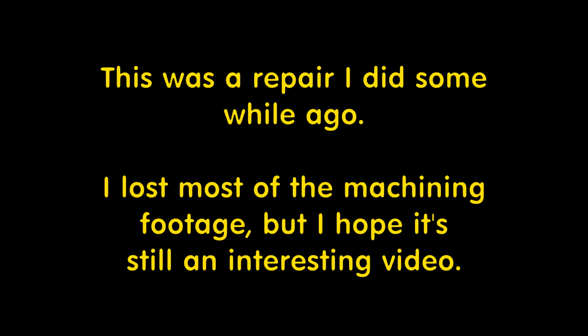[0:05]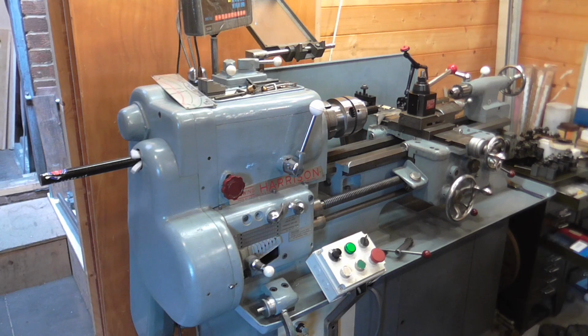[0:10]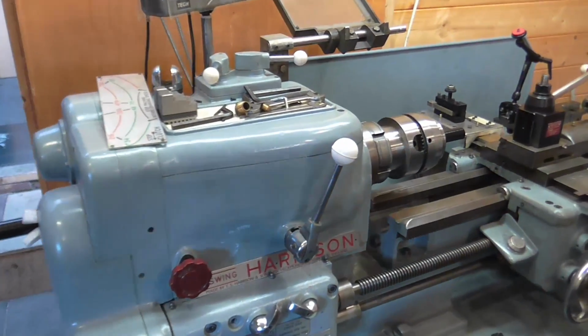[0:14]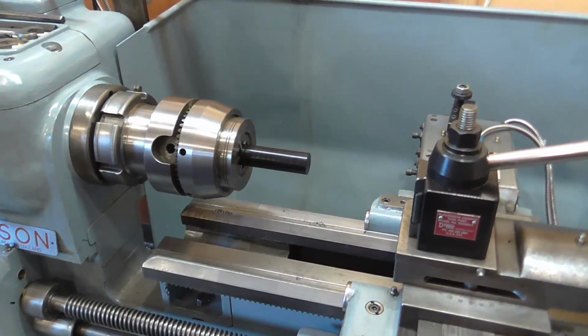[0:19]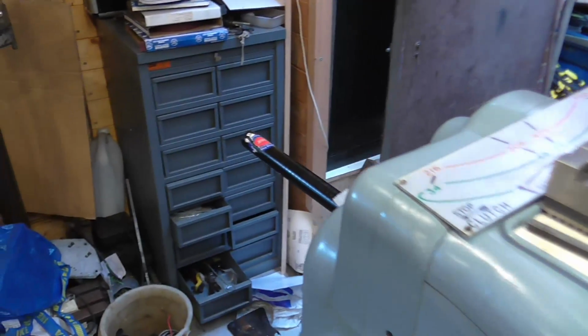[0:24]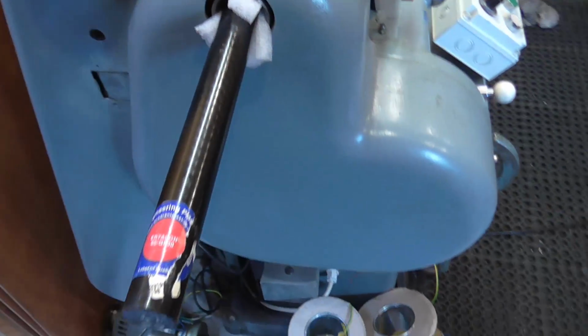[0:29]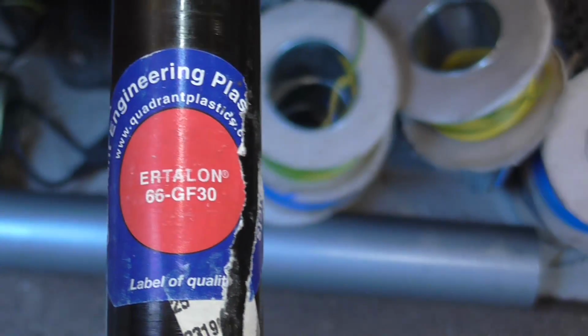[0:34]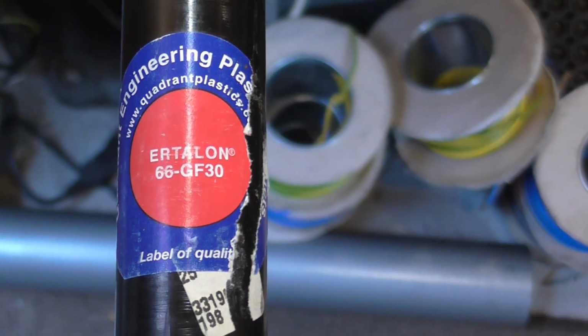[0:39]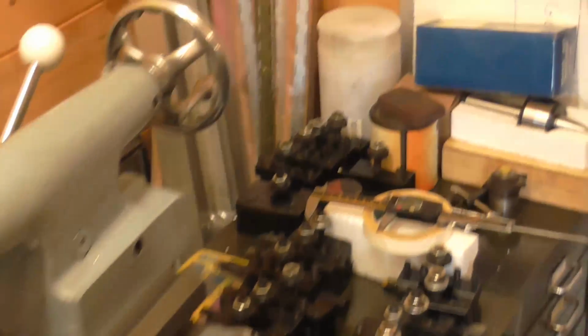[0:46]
I've got a little working at home job. In the lathe is a length of glass reinforced nylon, and the specific material, what have we got on the end here? I might even be able to zoom in. So, Ertalon 66 GF30, that's 30% glass. And what I'm making, there's a drawing up on the board,
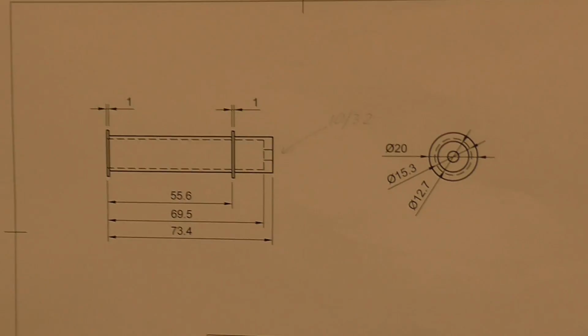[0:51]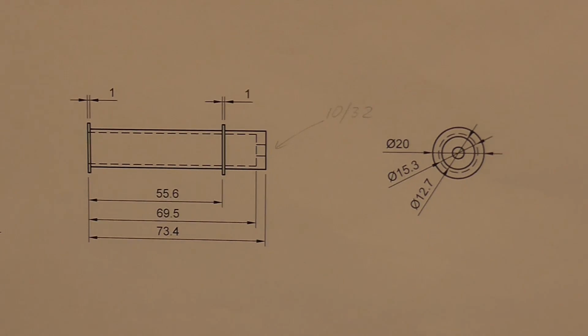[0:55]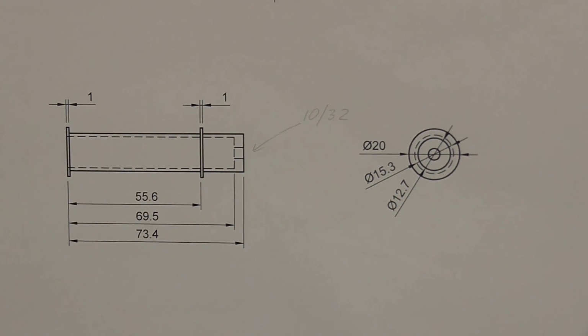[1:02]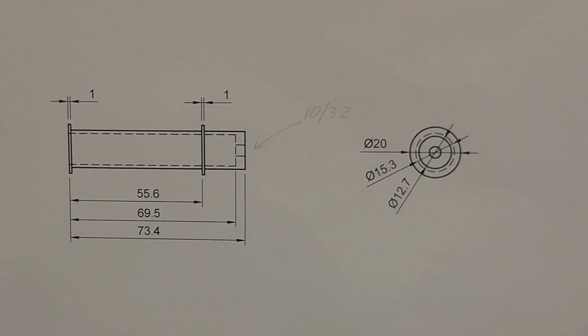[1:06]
and it's a winding bobbin for a solenoid. And the original was made out of Tufnol, and I seem to have put it on one side and can't find it quite at the moment.
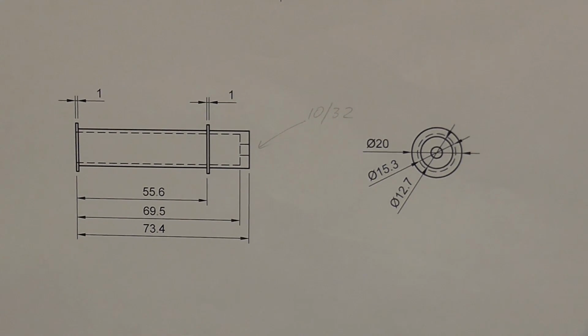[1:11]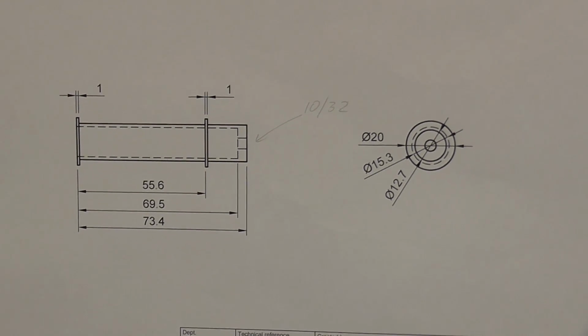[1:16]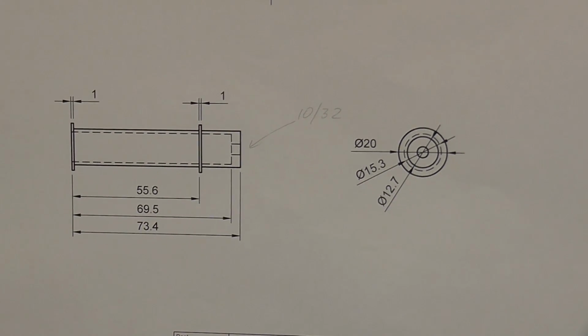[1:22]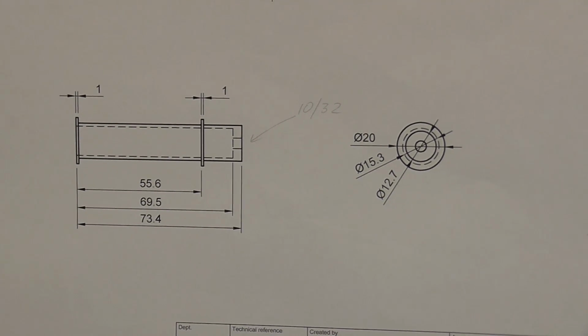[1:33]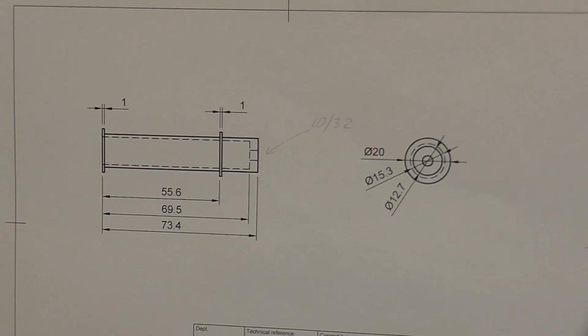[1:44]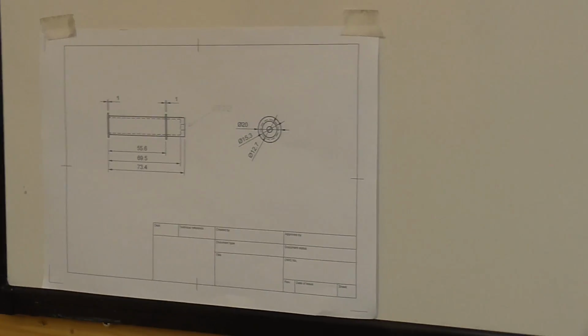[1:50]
But this was part of a pipette puller, and these take a capillary glass tube, and there's a heating coil, which is a piece of platinum wire, and you heat the glass up and pull it out to make very fine pipettes. And there's all sorts of timing sequences and variable forces and so on to get the size and shape of pipette needle you want. And these instruments are very expensive. I believe they're in the thousands of pounds.
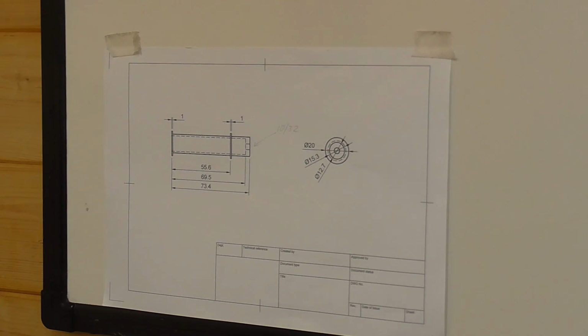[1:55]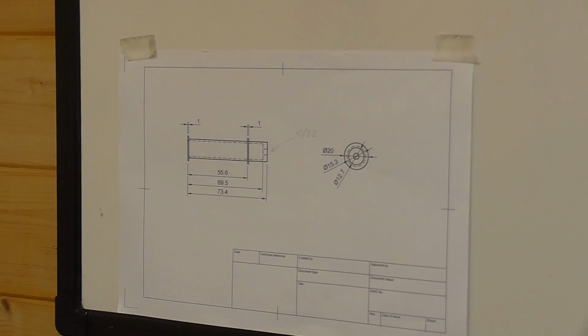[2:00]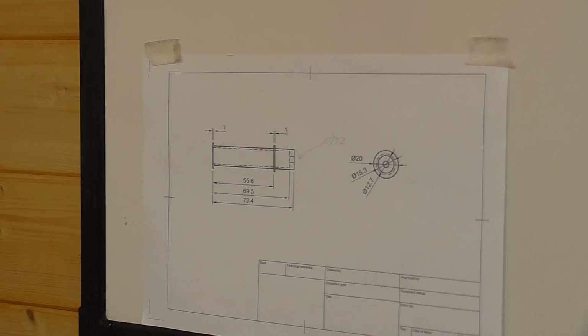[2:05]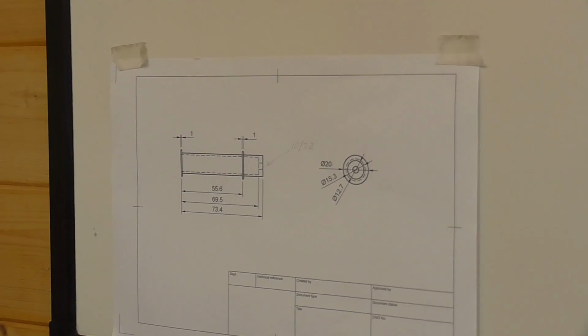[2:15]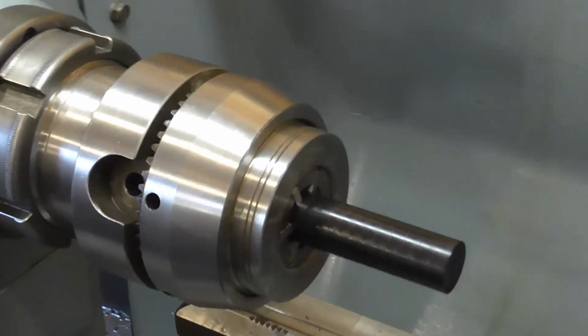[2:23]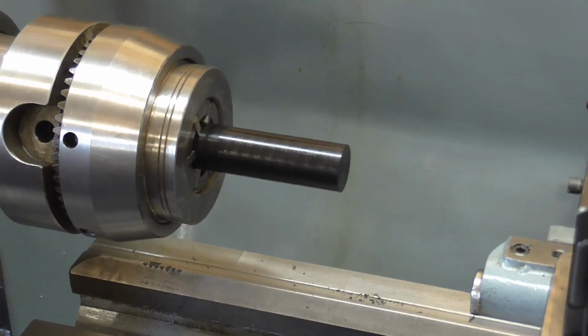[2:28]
I repaired this before. The core of the solenoid had actually closed down, possibly due to overheating, and was jamming. And I dismantled it all and actually used a slot drill, a two-flute end mill, to relieve it and get it working again. But the same thing's happened again, so I've decided to make a new core. So I've never machined glass-filled nylon before.
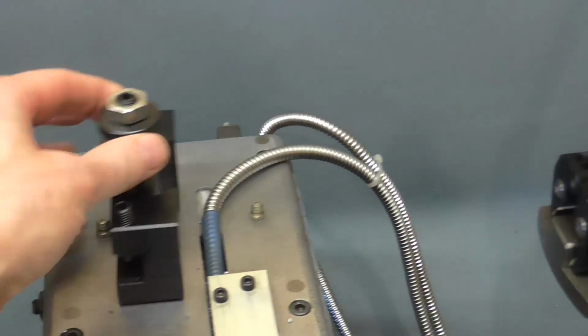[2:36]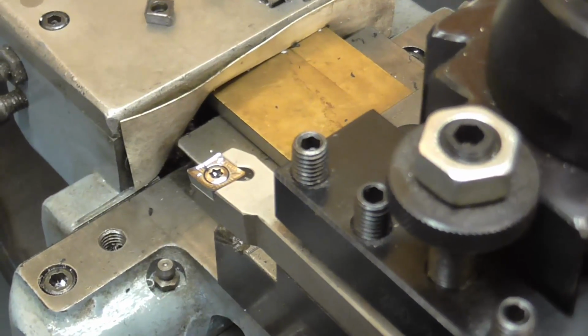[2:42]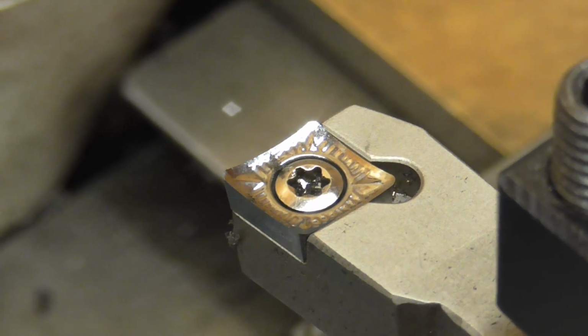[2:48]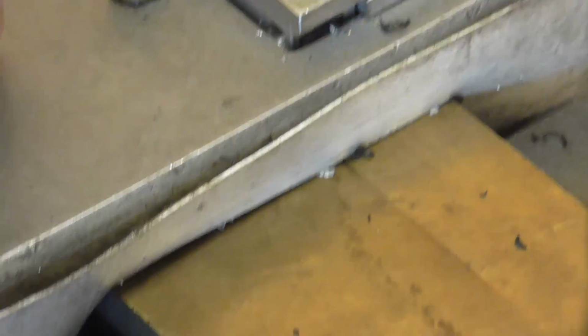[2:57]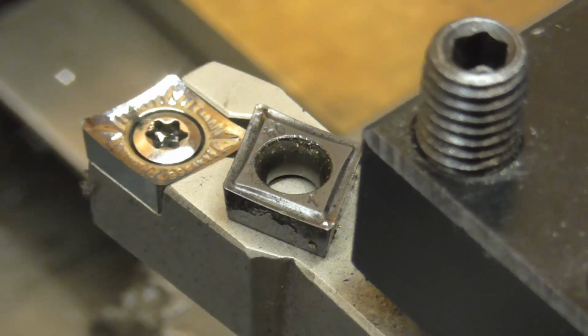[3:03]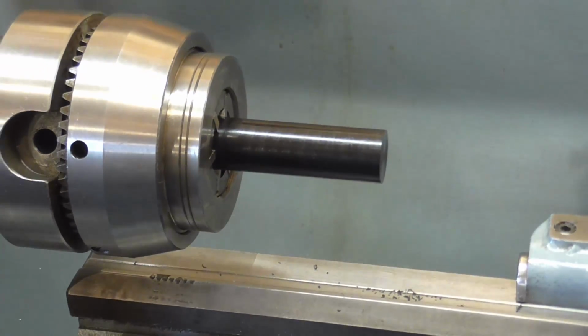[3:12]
It is, of course, quite abrasive. I have done a quick test cut. Let's put the tool in. So what I've got here, zoom in the correct direction, is a ground and polished insert normally used for aluminium, but it seems to give a good finish as a standard insert, which most of you will be familiar with. So we'll get started in a minute and see how we do.
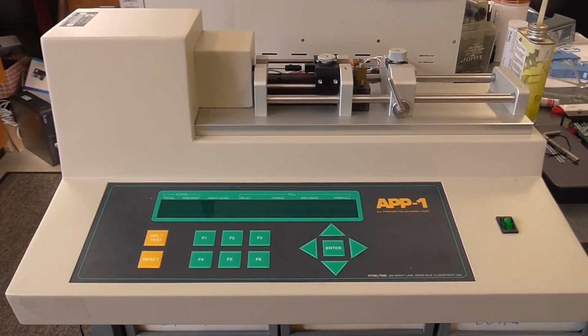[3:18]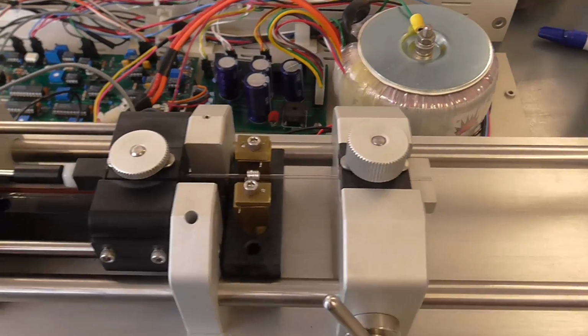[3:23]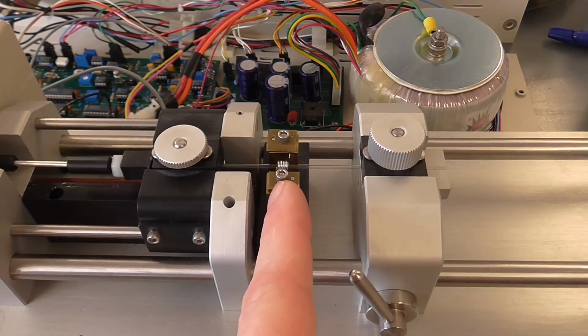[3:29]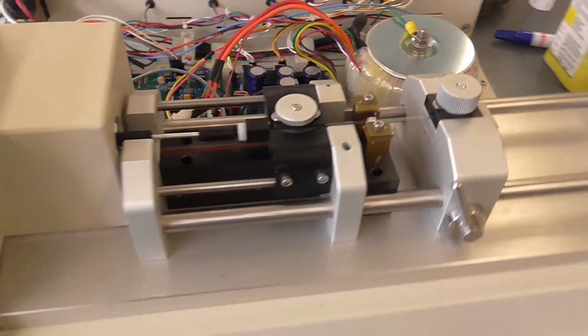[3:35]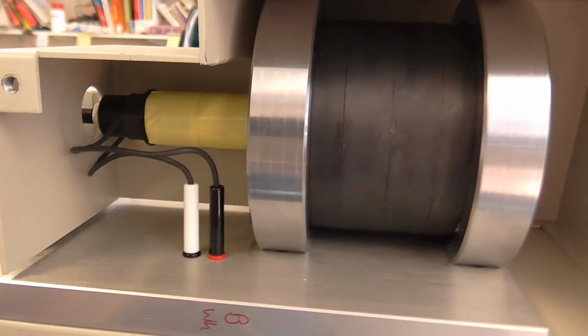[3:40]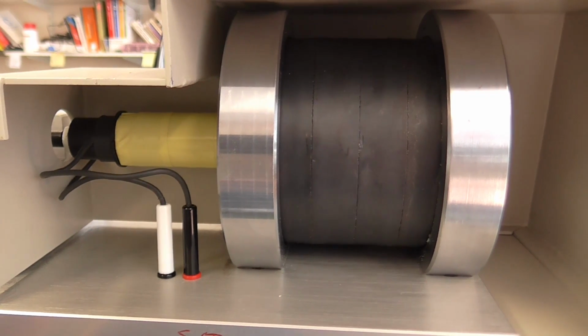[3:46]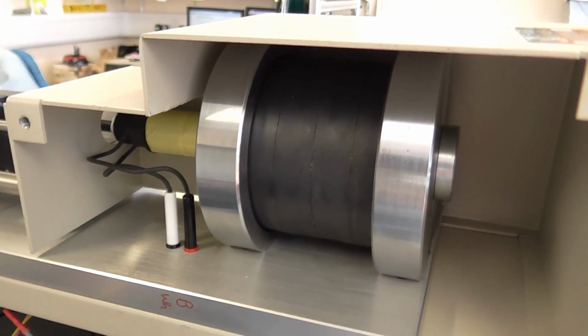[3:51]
Well, this is the pipette puller I've been doing the repair on, and you can see in here, here's a glass capillary and a platinum heater wire. And there's the carriage with the link rod that connects to the solenoid, for which I machined and wound a new coil, the coil former. And I have run it up and it does work, and we'll run another little test in a minute.
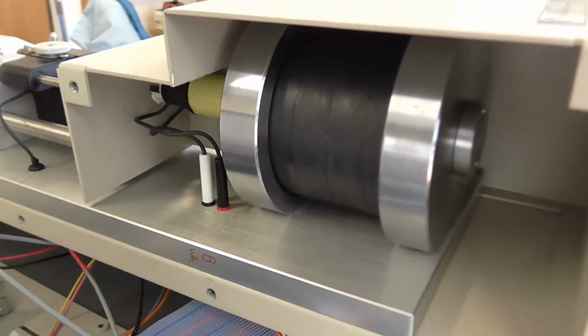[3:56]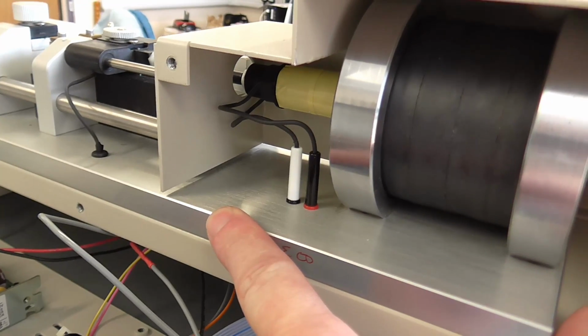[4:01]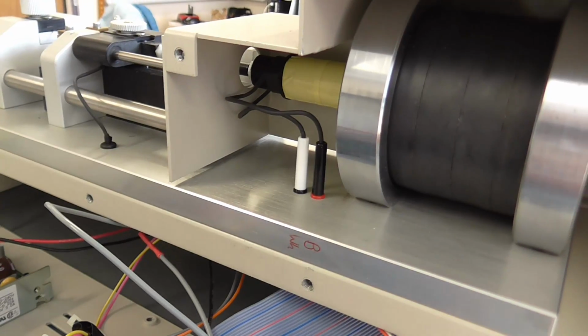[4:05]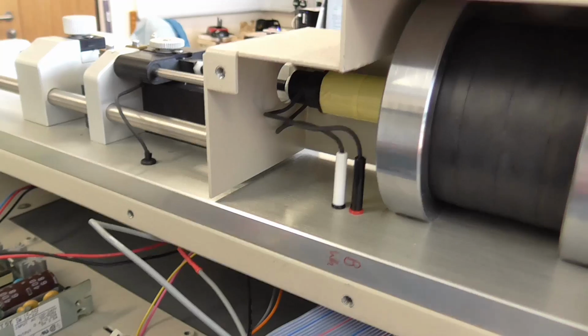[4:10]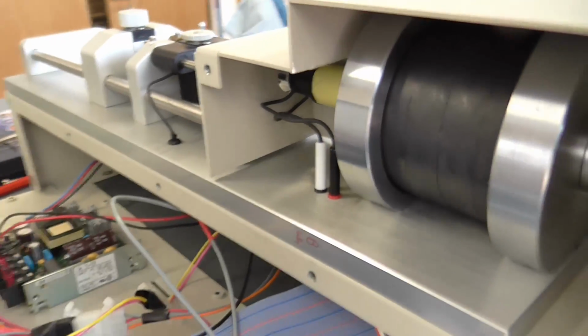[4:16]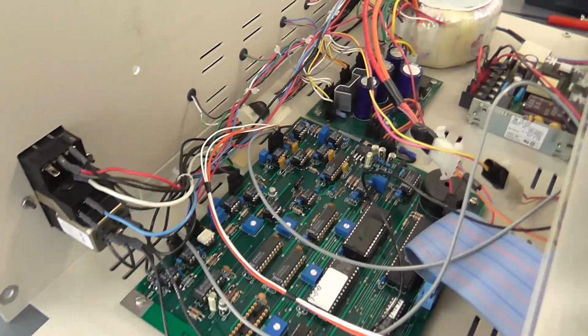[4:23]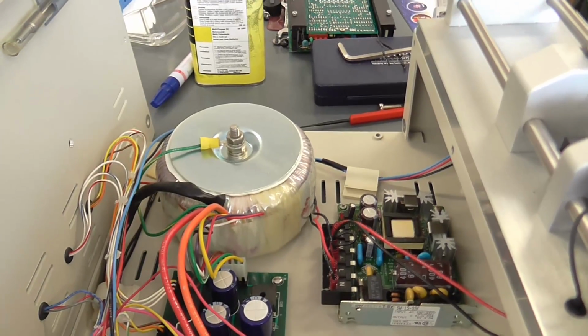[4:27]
Had a lot of swearing at it. This aluminium plate was apparently built in situ and is incredibly difficult to get out as an assembly. You can see there's not much clearance here, but there's things sticking through the bottom, and it's like a Chinese puzzle. And then we come to the rest of it, and the build quality is not exactly high.
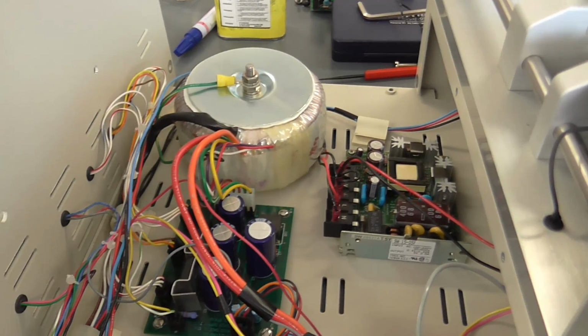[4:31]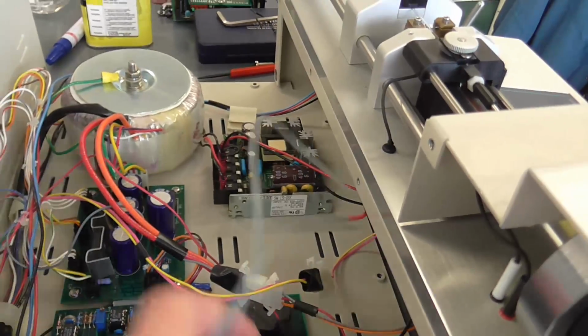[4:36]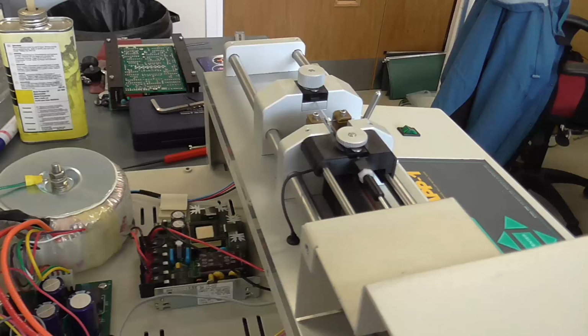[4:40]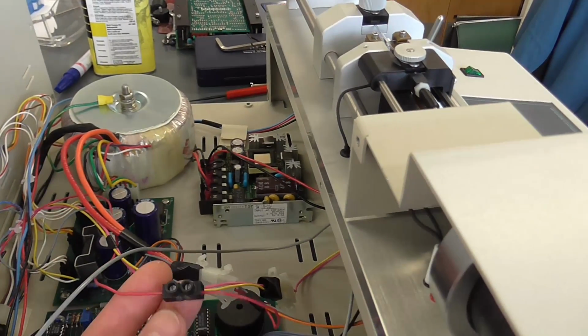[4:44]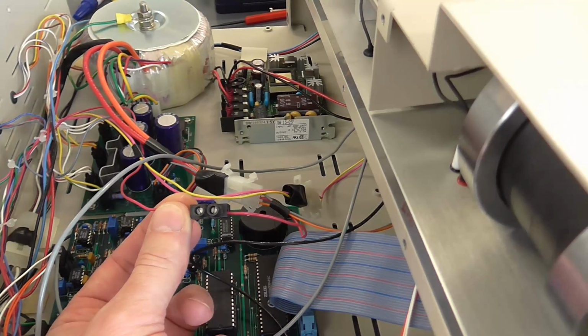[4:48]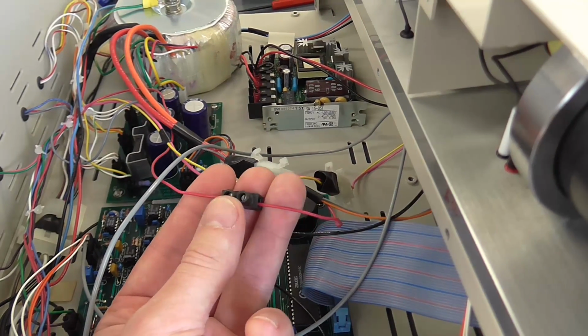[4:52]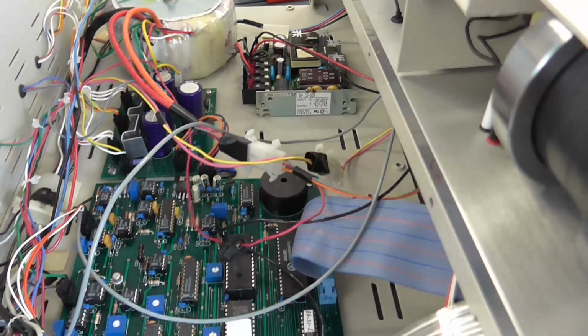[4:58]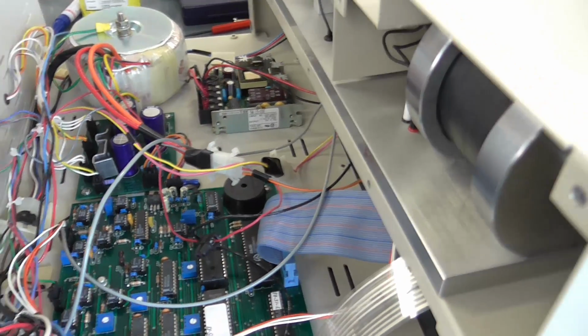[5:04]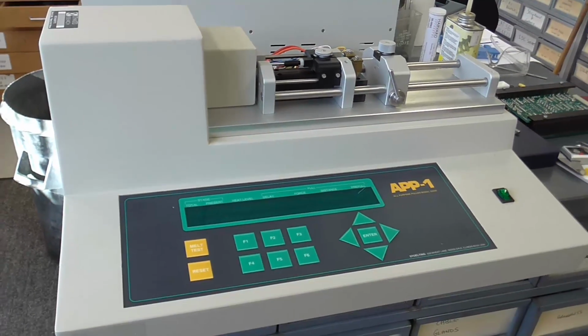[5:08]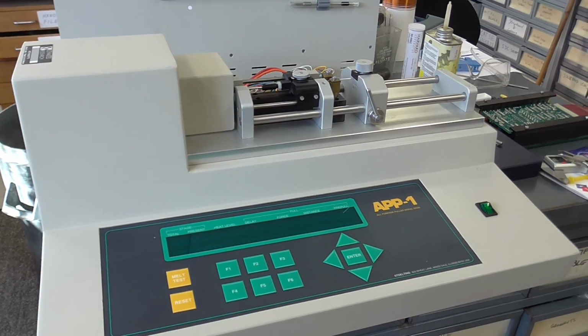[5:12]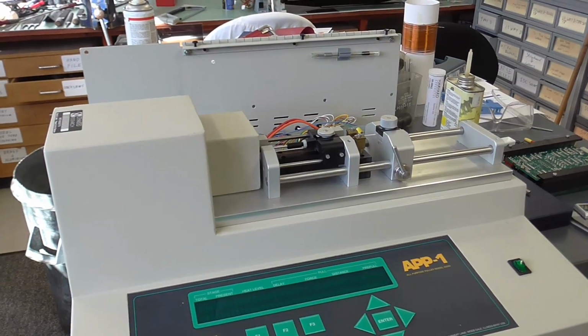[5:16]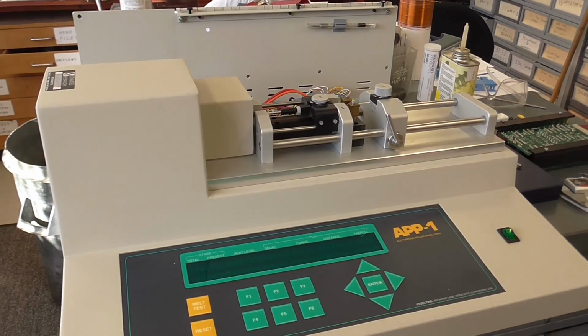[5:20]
The wiring is extremely random and poorly organised, with all this rubbish and lots of slack. And most of it's on connectors, apart from this wire here, which you actually have to cut to get the thing apart. So on this occasion, I have repaired this instrument before, and I soldered this joint and sleeved it, but I've just put a terminal block in this time in case I have to take it apart again in the near future. And one of these instruments is, I'm told, £4,000 to £5,000 to replace. So it's a good repair. So I'll just get it powered up and we'll run a test on it.
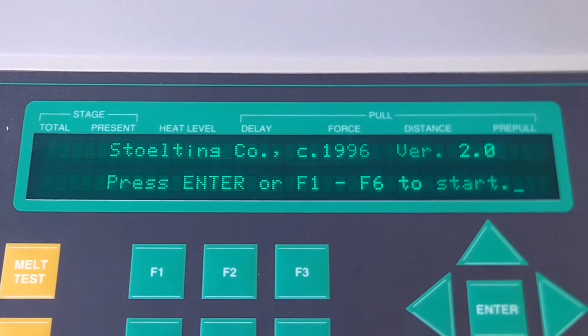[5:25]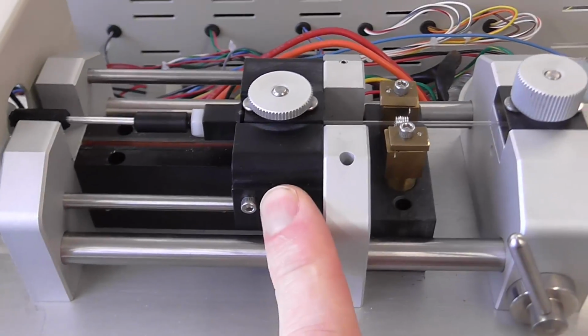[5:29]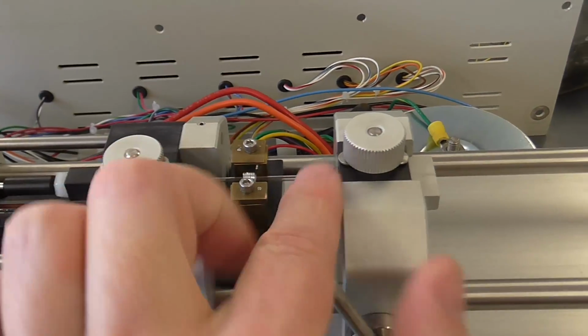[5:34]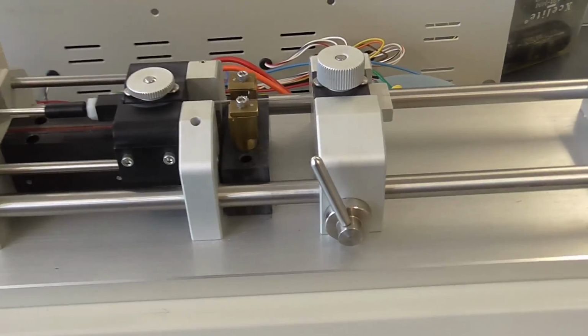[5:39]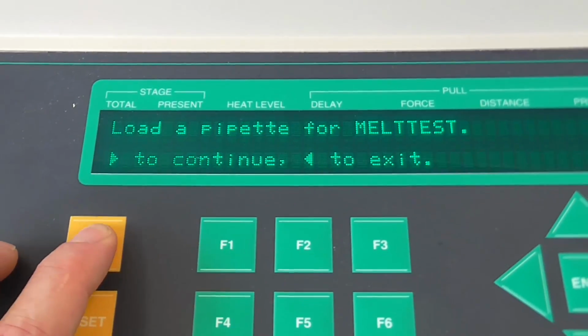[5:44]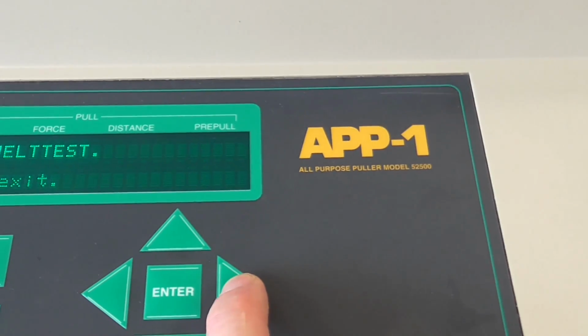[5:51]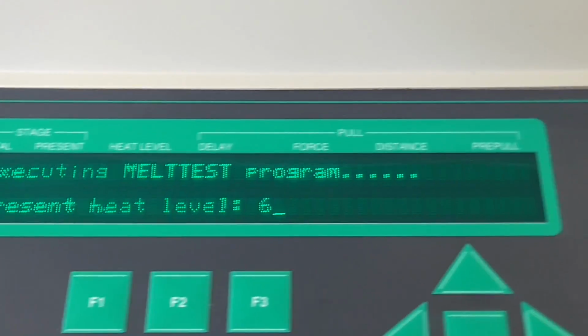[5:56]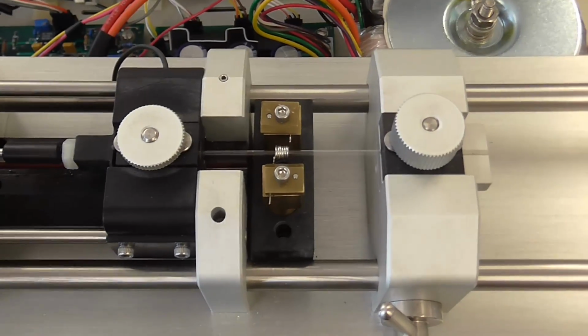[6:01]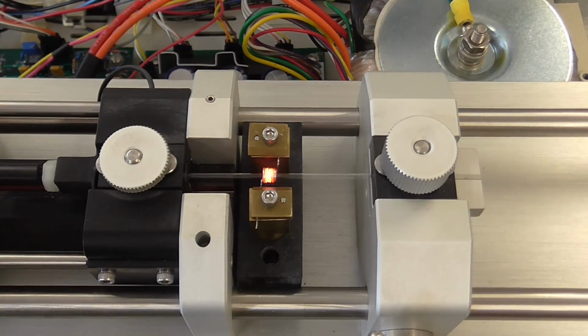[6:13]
Okay, you can see we've got the startup message. The carriage is all the way to the right. Capillary tube is clamped. The loading block is locked. So I think all I have to do is do a melt test. And so it's gradually heating up the platinum coil. See the steps in brightness as the energy level is pumped up. Just starting to go, see the carriage moving.
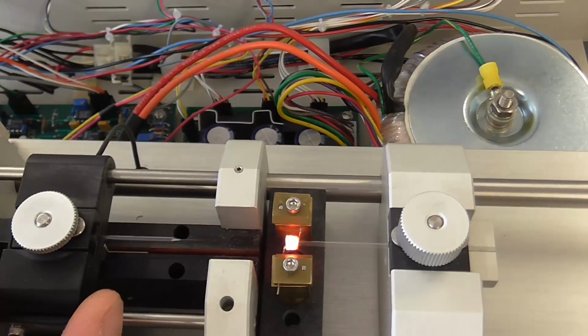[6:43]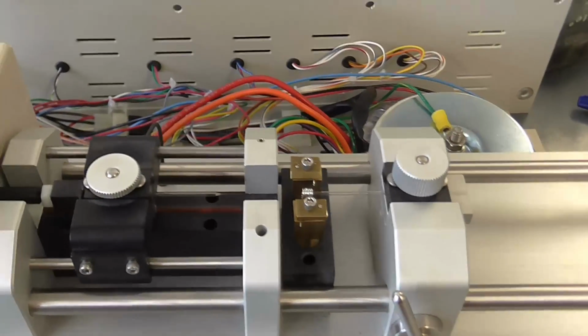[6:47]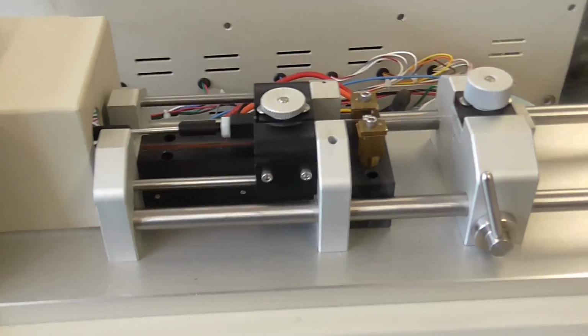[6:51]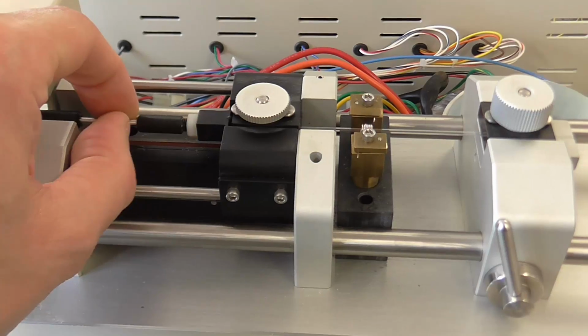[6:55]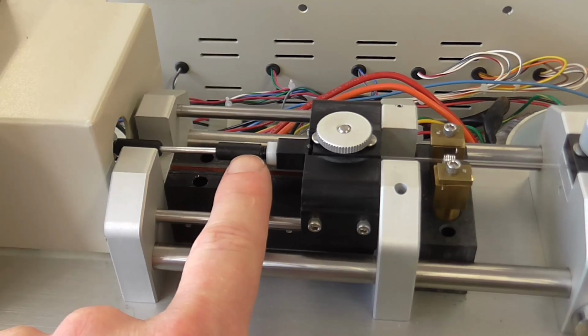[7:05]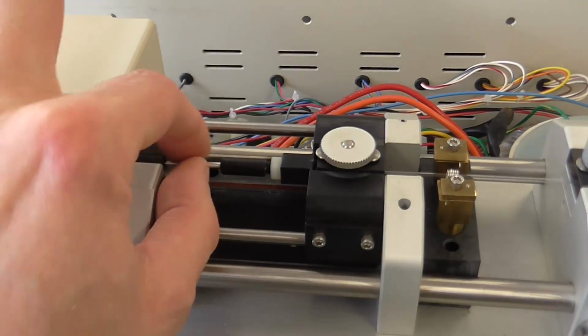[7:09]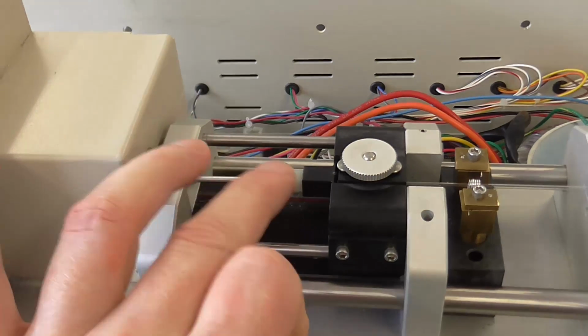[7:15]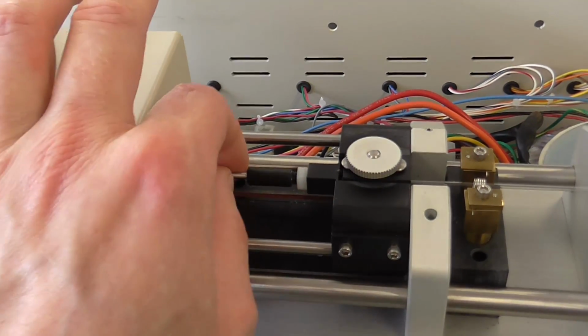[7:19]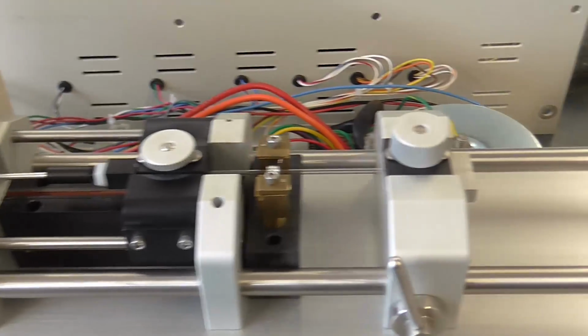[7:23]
And we have a problem. The carriage is now binding, so I need to take another little look at this. Okay, we're going to try this again. There's a little link rod in here that's got a certain amount of slop in it, and that was one of these joints. These caps screw on and were glued, leaving a certain amount of play, and one of them, the glue had failed and the cap was screwed down, causing the rod to be tight and not allowing any flex. So we'll try that again.
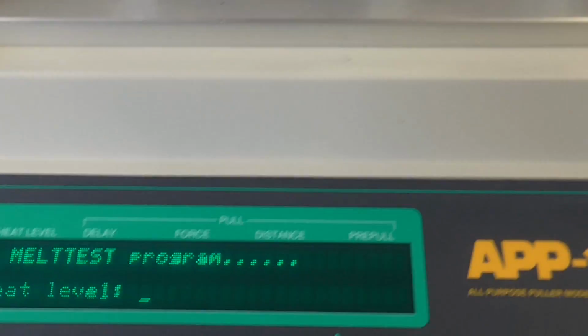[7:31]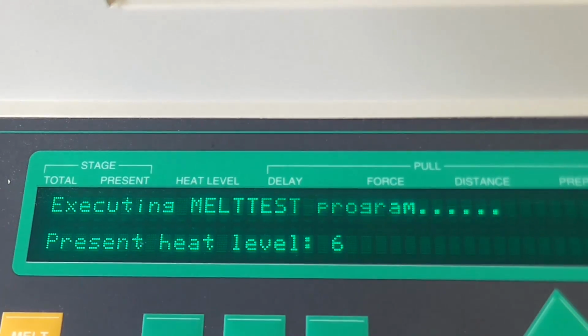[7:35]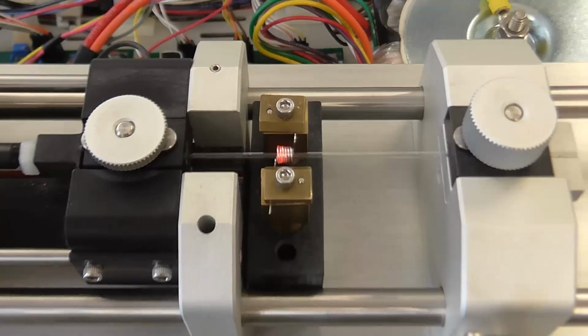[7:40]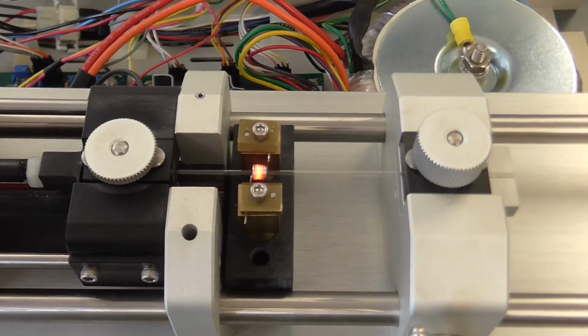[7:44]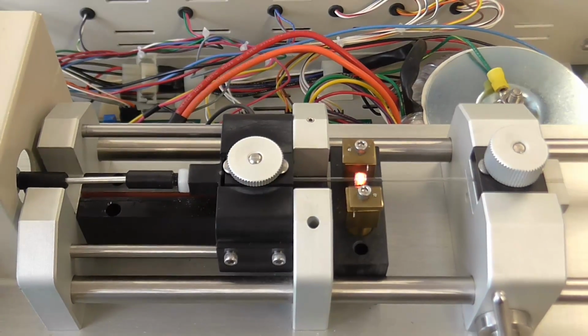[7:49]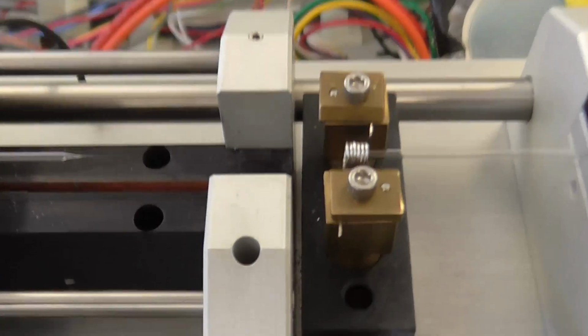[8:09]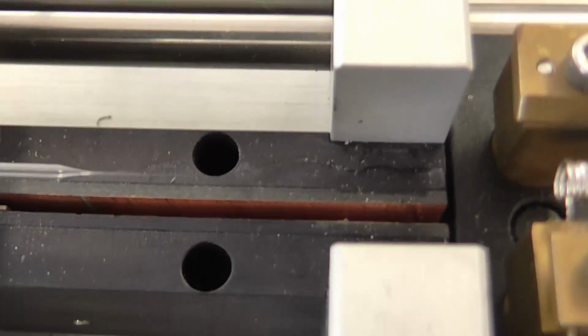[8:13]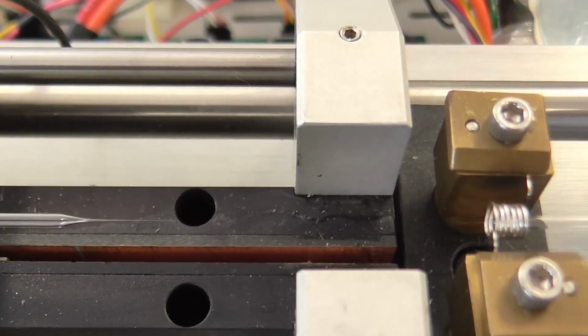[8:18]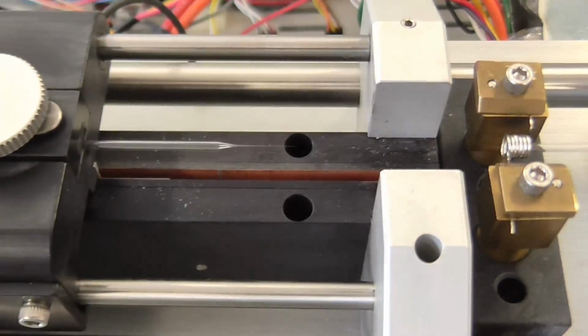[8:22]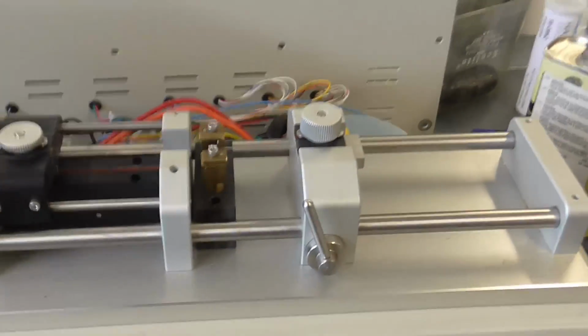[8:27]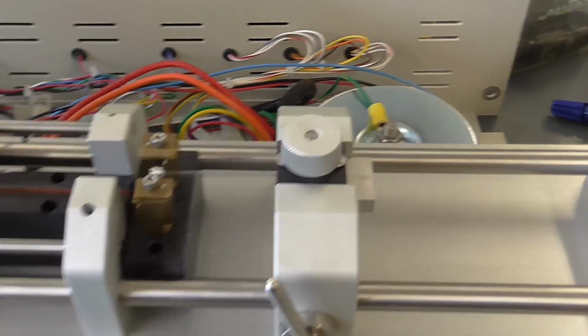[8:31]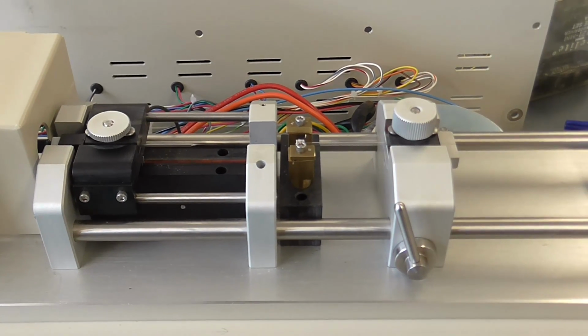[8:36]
You can see the heat levels gradually ramping up. See, the glass is softening and it's starting to pull. And there we go. And if I come in really tight, you can see the very fine glass pipette that's been pulled. And by altering the current in the pull solenoid and the heat levels and the amount of time it spends soaking the tube, there are a series of programs so you can set the shape and fineness of the pipette you create.